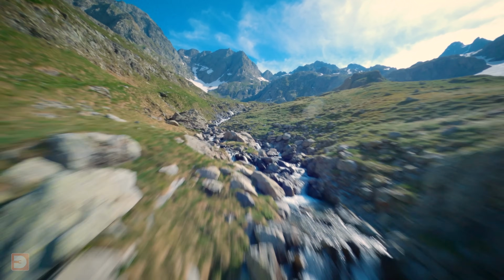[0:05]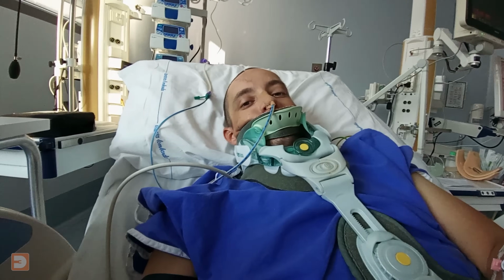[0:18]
Almost 4 years ago, whilst filming a series for Disney Plus, I fell 300 feet, just over 90 meters, down a mountain in the Italian Alps, breaking in multiple places my neck, my spine, my pelvis, well, pretty much everything, ultimately resulting in an 8-day coma and a drastic change in lifestyle going forward.
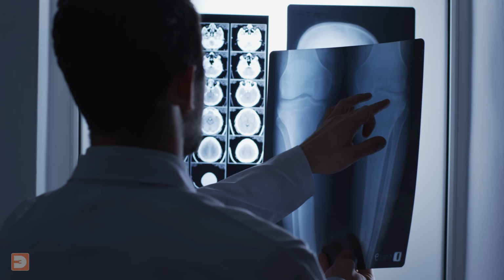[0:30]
With that being almost 4 years ago, I have obviously recovered a lot in many ways since then, but much of the fallout from that day is ongoing and or lifelong, and one of these issues is my leg.
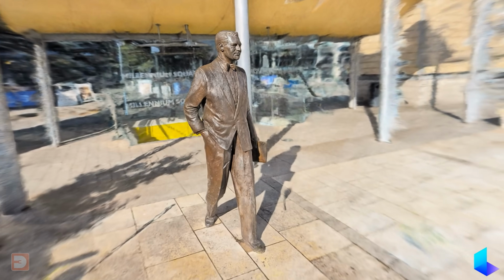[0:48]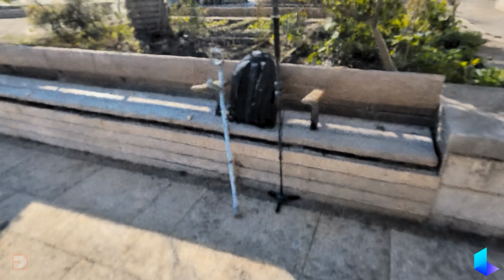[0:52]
Whilst I can stand and walk unaided for a bit, for example if I'm just walking from one room to another in my house, or if I'm just doing a quick standing shot for you guys, if I need to stand or walk for longer periods, it can cause issues, so when I'm out the house, I tend to use one or two crutches. I don't normally use them whilst actively filming, but you may have noticed them lying around in the background in previous videos.
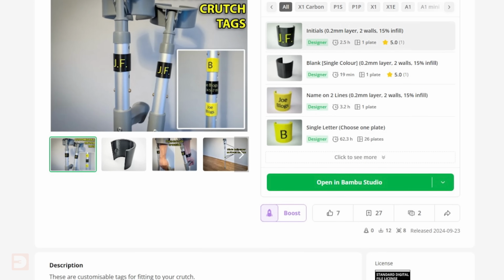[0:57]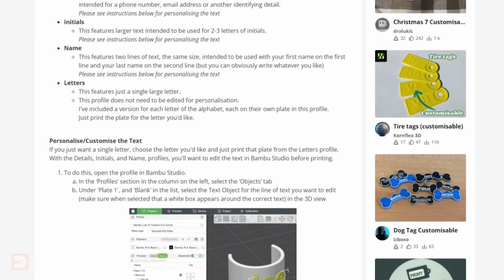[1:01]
A while back, I released a simple design for customizable tags that you could clamp onto your crutches, allowing you to personalize them a bit. And I have several useful crutch mods and accessories on the way.
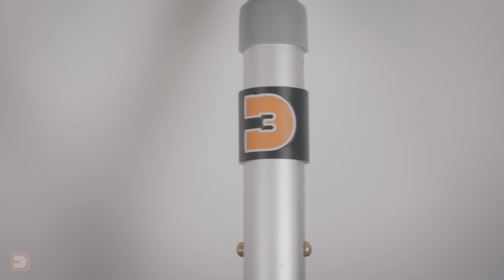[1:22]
As Makers Central, which is going to involve a lot of walking, began to approach, and as my leg's not been so good recently, I knew that I was going to want some sort of walking aid whilst there, but I also knew that I wanted something that felt a bit more me than my standard hospital-issue crutches, even if they are sporting the 3D Rev logo. So I decided to design and 3D print my own 3D Revolution walking cane, ready for use at Makers Central.
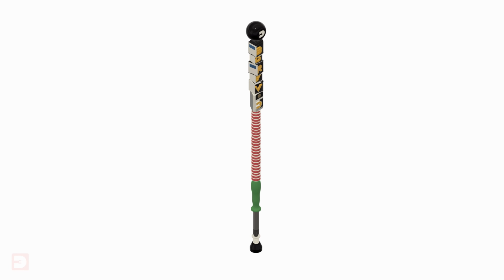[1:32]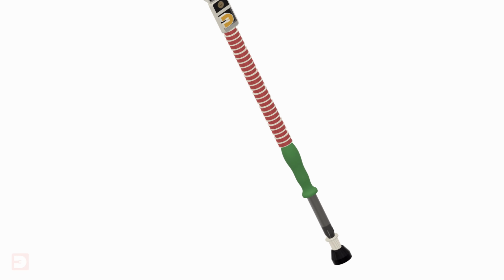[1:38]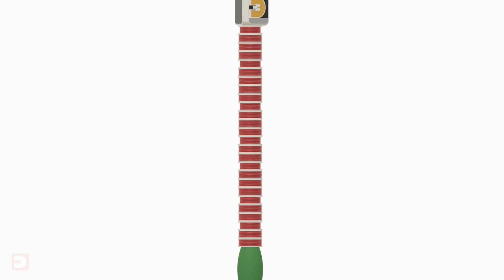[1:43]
Once I'd decided on an appropriate height for my cane, I designed what I felt was an appropriate cane for an event like Makers Central, featuring a screwdriver complete with screw, a stack of spools of 3D printer filament, and a pile of 3D printers.
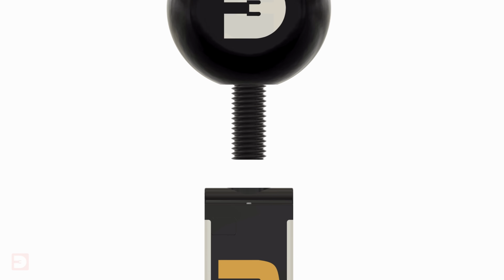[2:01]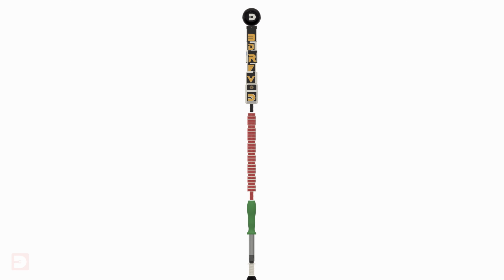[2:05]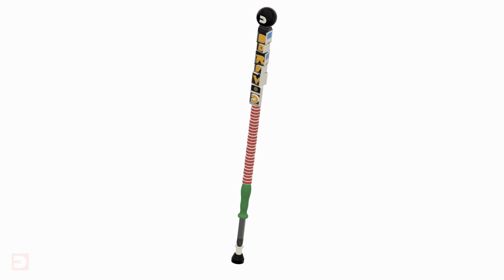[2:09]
Now, the height that I decided on for the cane is nearly a meter, and being that I don't have a Delta printer which can print at that height, yet, I divided the main shaft of the cane into three sections, plus the handle and the TPU foot. Each section has a printed, threaded screw built into the design, extending out of one end, with a threaded hole at the opposite end, allowing the whole thing to screw together.
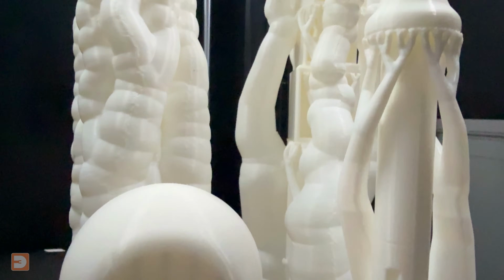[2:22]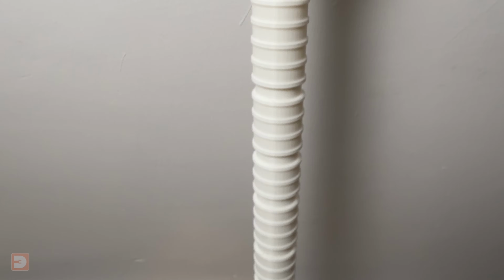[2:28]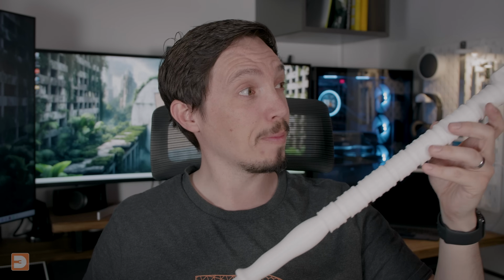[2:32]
Now at this stage I had planned to use a 5mm carbon fibre rod as a reinforcement spine, and so I had left a hole through the entire design to accommodate this. I printed it out in one colour and low infill, just as a quick test to check that I was happy with the size and design before committing to a much longer, full-strength multicolour print. I was really happy how the test print came out and all fitted together.
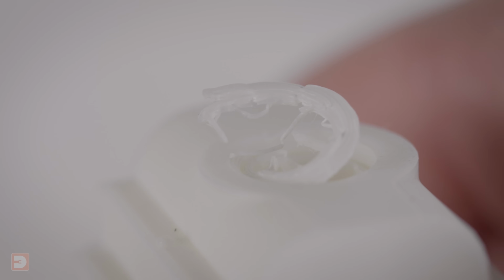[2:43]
However, as I was tightening up the handle, at the point that the screw met the handle part, it delaminated and split off. Now I'd possibly naively assumed that this was due to the low infill and wall count of this draft test print, and didn't feel that it necessitated any changes in design. In fact, quite on the contrary, I felt that the rest of this print was stronger than I'd expected, and so decided to remove the hole for the carbon fiber rod from the design.
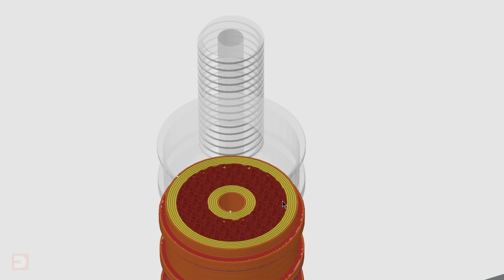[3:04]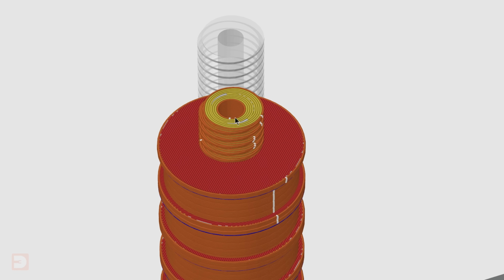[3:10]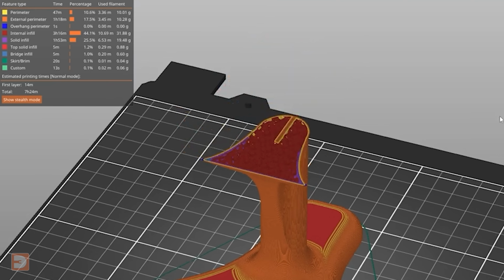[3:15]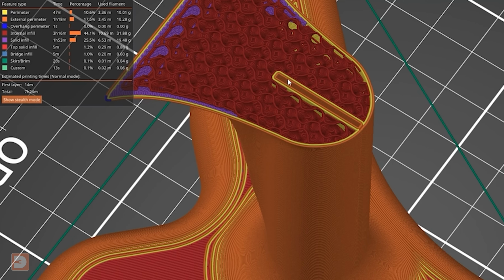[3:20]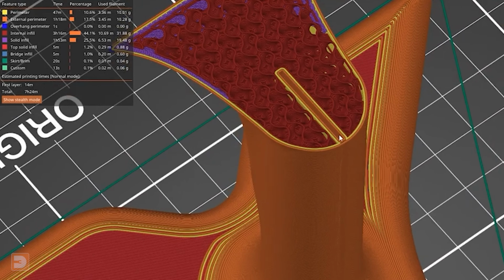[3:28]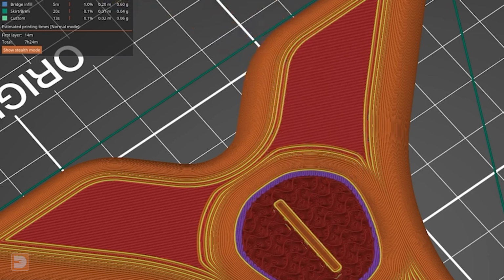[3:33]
This was because I didn't feel that the rod was necessary for strength, and featuring the hole to cater for it would make the thinner parts of the design, especially the screws, extra thin. This is despite it adhering to the trick that I covered in an earlier video a couple of years ago, where adding a negative volume inside your model can actually increase its strength, as it will add additional walls around the negative volume. However, that's more for if the negative volume is closer to the outer edge of the model, so that the new walls are directly connected to the exterior walls as a continuous extrusion, and with these parts being relatively thin already, this doesn't offer a huge help.
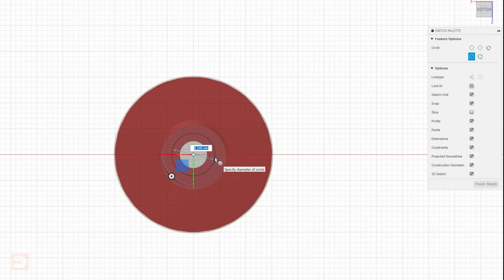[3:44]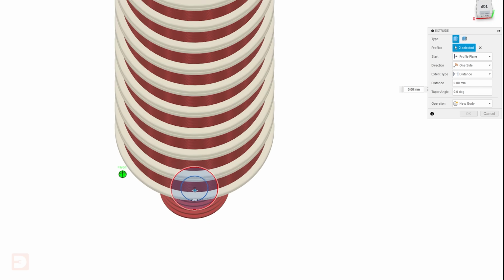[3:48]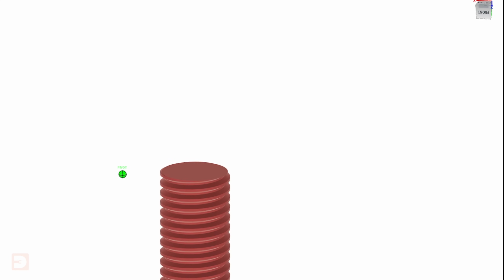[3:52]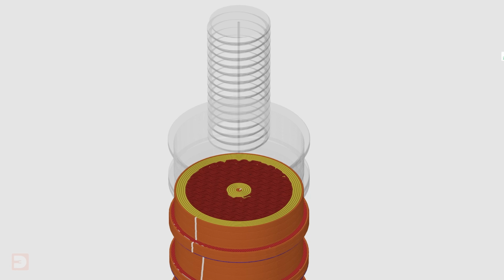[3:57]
So I made a compromise. Whilst removing the hole big enough to fit the carbon fiber rod into, I kept a very small hole in the same place that would allow air to escape when screwing together to prevent any chance of air pressure buildup causing fitting issues when connected, and this then still added the additional walls down the center.
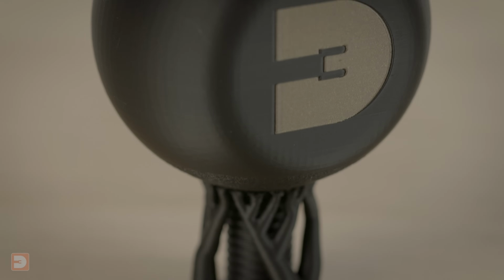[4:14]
With those design changes made, it was time to print it, and the full color, full strength print time came to around 3.5 to 4 days, partly due to the amount of color changes and partly due to the height of the prints.
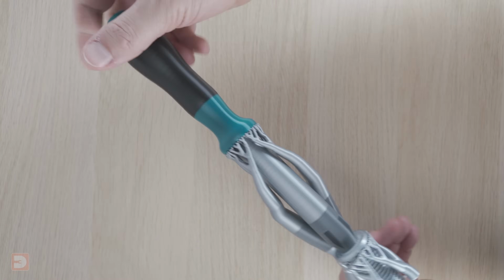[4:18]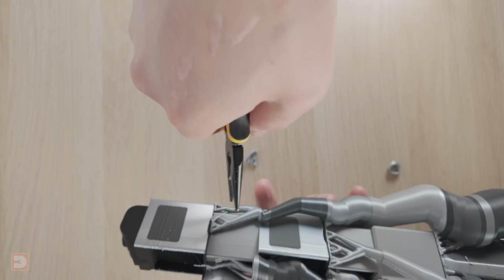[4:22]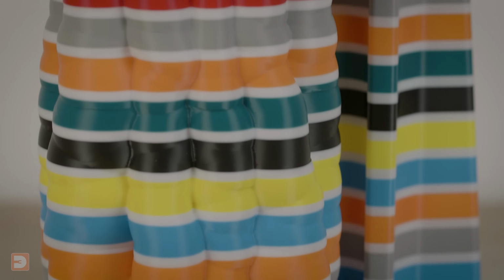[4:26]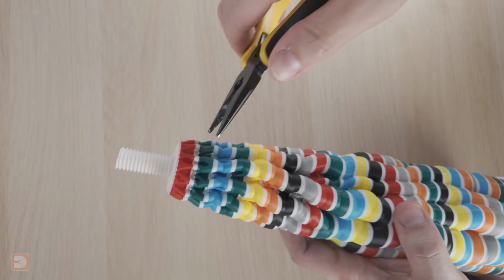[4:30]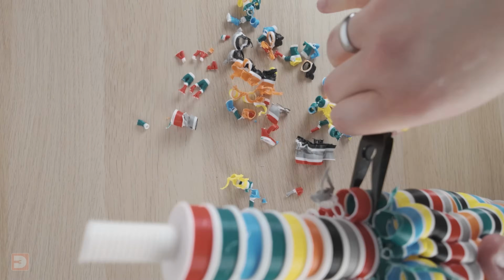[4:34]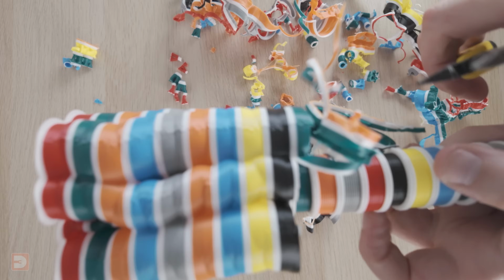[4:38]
Each section of the cane was encased in its own shell of support material. The screwdriver and printer sections were fairly quick and simple to remove. However, the filament stack section, due to having overhangs around the entire perimeter every few millimeters of height, was entirely shrouded in support material. But whilst it did take a while to remove, and with the help of needle nose pliers, it was actually very easy and came away without an issue.
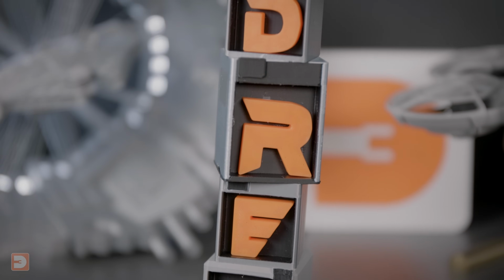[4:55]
I screwed it all together, including the TPU foot, and glued in the letters into the printers. I could have printed the letters as part of the main model, but that would have then added an additional 1 to 2 color changes per layer, and the letters would have also required their own support material, so it wasn't worth the hassle. It looked and felt great.
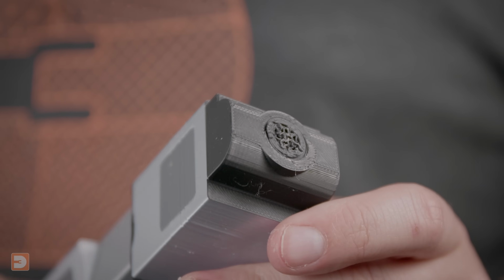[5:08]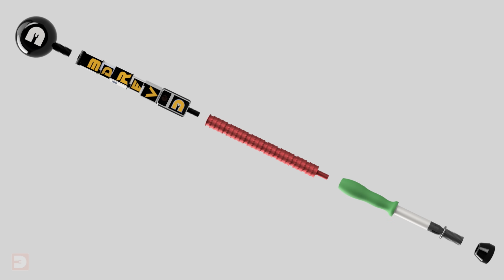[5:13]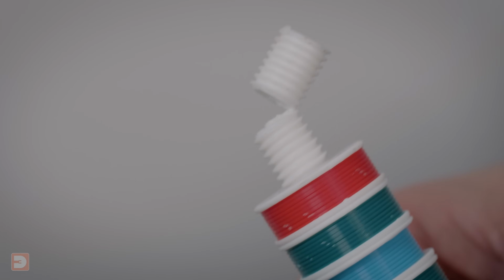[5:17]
However, whilst testing it and before I even got to film it for you, just like the test print, one of the screw sections connecting two of the segments snapped. I then tested the strength of the other screws on the other segments and found the exact same thing happened. They all delaminated across layer lines when put under lateral stress. With the segments all rendered useless now with their screws snapped off, I thought before continuing it would be best to test the strength of the actual lengths of cane themselves other than the screws to ensure that it wasn't just a general issue with layer bonding.
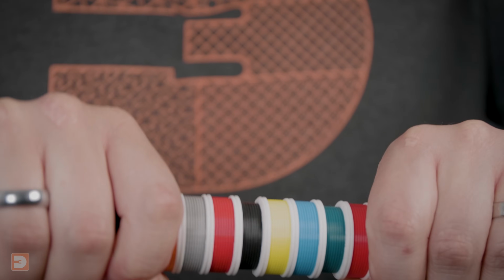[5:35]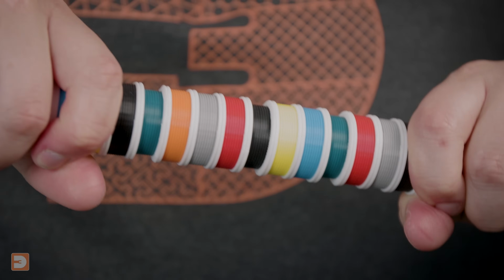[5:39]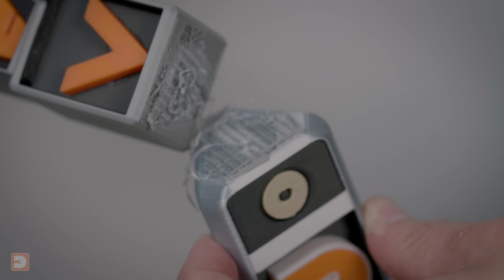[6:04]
The filament stack section, which featured the most layer bonds between different filaments, was super strong and wouldn't break. Whilst the printer stack was very strong, the Delta printer at the bottom did snap off. Now, this is at the point of a layer change between a silk PLA and a regular PLA, and it could suggest that there was an issue with these two filaments bonding. However, it did require a lot more lateral force to break this than the cane is likely going to experience in general use, so I wasn't too concerned.
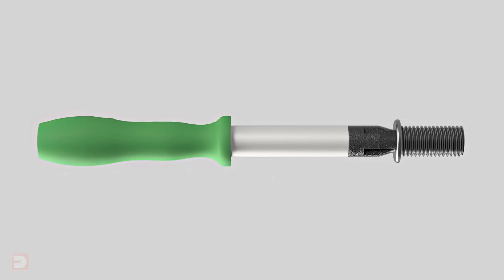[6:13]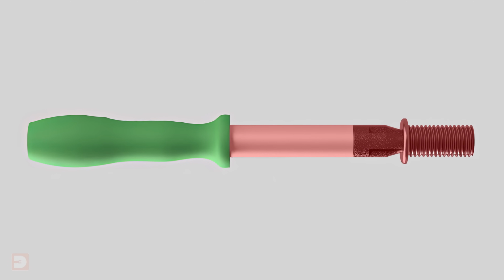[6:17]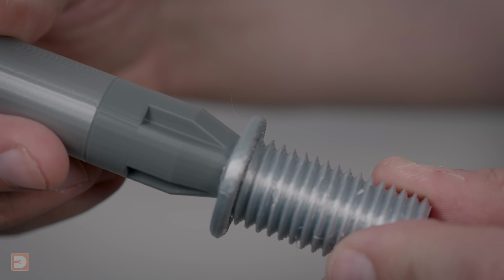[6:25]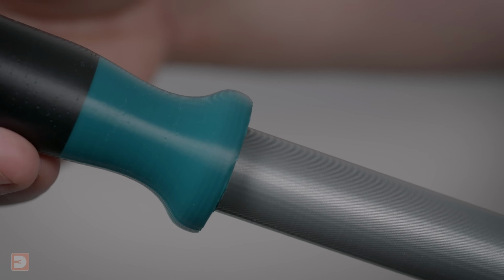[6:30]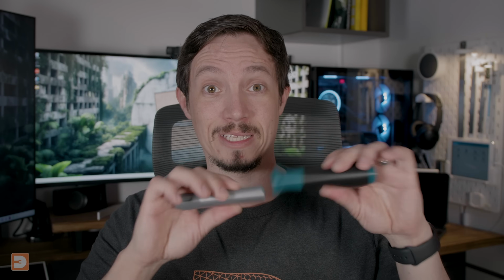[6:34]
The real issue, other than the screws, was when strength testing the bottom section, the screwdriver. The long extrusion of the screwdriver was already thinner than any other part of the cane, and then the point at which the screwdriver met the large screw at the foot was almost as thin as the diameter of the screws that have been snapping. This part snapped both at the point that the screwdriver connected to the big screw at the base and also at the top of the long extrusion connecting to the handle. So it was back to the drawing board again.
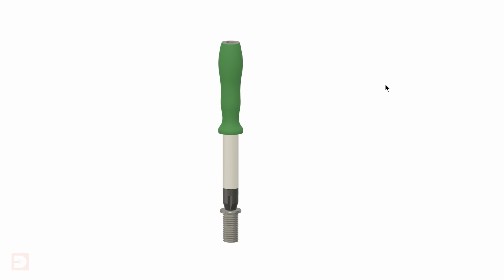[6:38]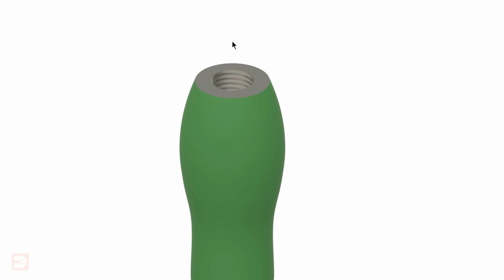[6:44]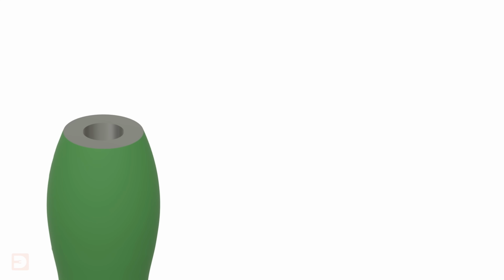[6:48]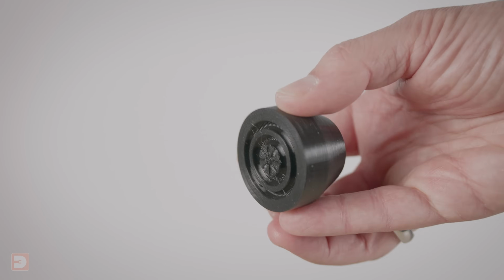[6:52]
The first of the issues to fix here was easy. I took the screwdriver and just made it fatter, therefore increasing the thickness and strength. I didn't increase the size of the base screws, so it would still fit the TPU foot that I'd already printed, which I felt was a good size for this use. The second issue, whilst similar, is slightly different.
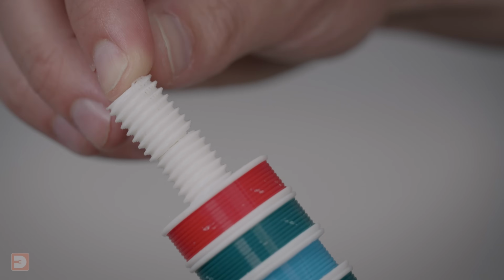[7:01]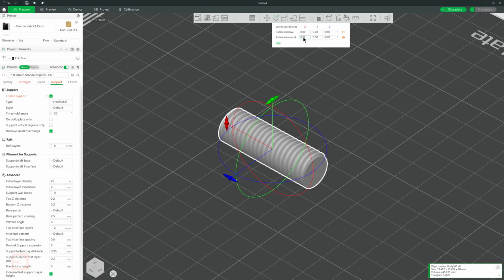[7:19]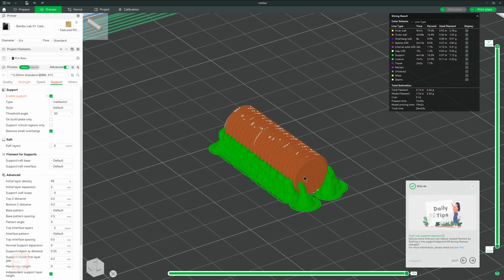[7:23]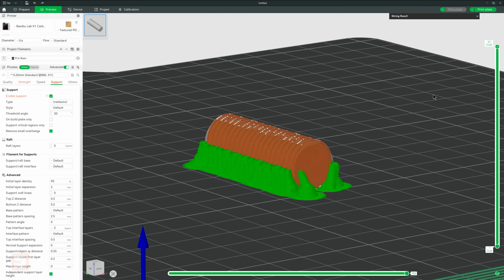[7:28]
All the screws connecting the segments of the cane together are breaking, but they're all breaking across the layer lines. No matter how I printed these screws, whether they were pre-attached to the main parts of the cane as they have been so far, or if I printed them on their own upright, they're still going to present the same weak point against lateral strain on the cane. The only alternative to printing these screws upright on their ends would mean printing along their sides using tons of support material, which would almost certainly impact the effectiveness of the screw's threads. But then I realized that's not the only alternative.
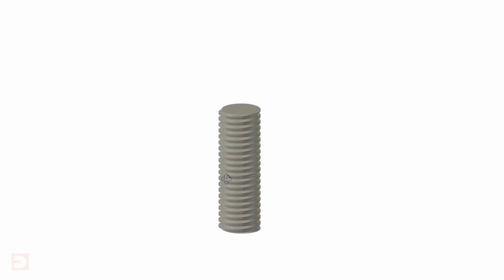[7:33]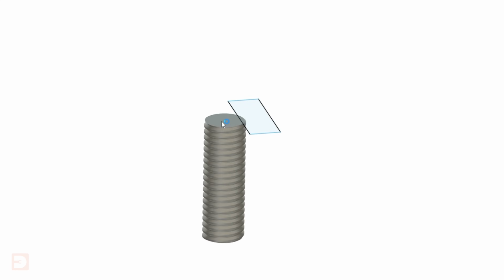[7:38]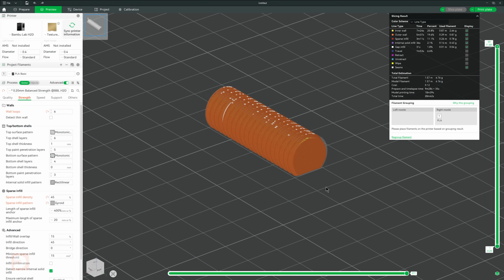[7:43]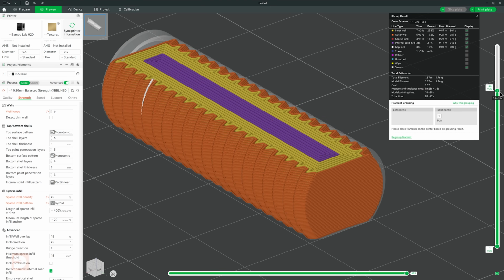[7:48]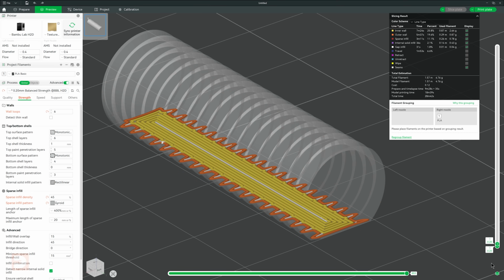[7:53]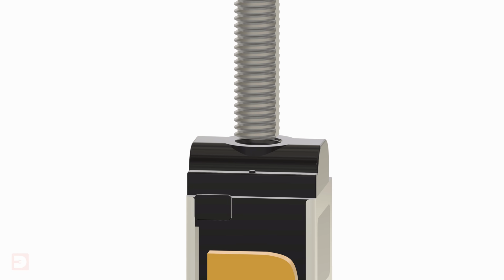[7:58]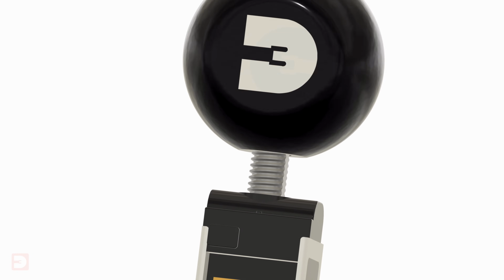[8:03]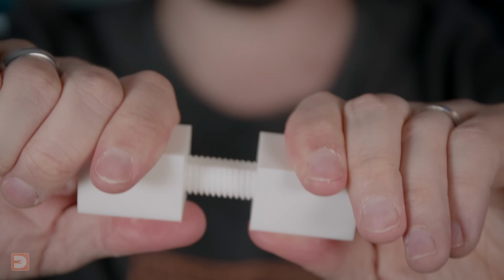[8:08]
If I designed the screws as separate standalone parts, which would be connected to the cane post-printing, and then sheared off an area of one side, I could then print it lying flat on the print bed without the need for supports or overhangs. With it printed sideways, it means the extrusion runs lengthwise, providing significantly more strength and preventing snapping due to delamination. When fitted, these screws will only ever be placed under lateral force, unlike the rest of the cane that will be put under downward force, so this should be perfect. I did a quick test print as a proof of concept, and it works perfectly.
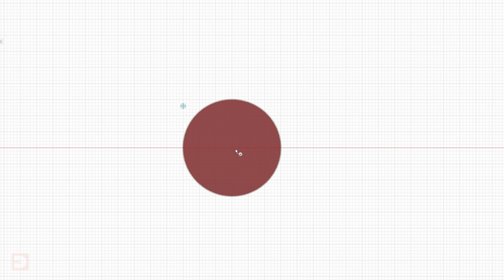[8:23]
As an added bonus, due to the sheared side of the screw leaving a gap down its entire length when being screwed in, there's no chance of it forming a seal and building up pressure, so I could completely remove the hole down the entire length of the cane. As the screws were no longer pre-fitted to the actual cane lengths, they needed to be replaced with female threads.
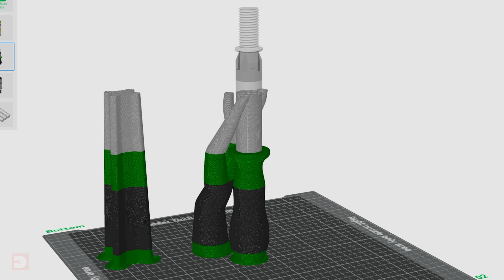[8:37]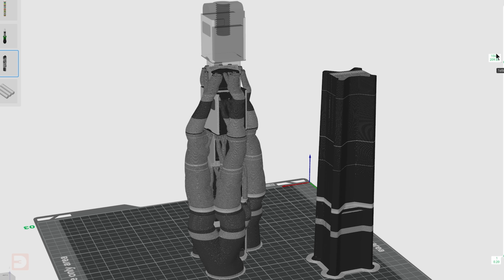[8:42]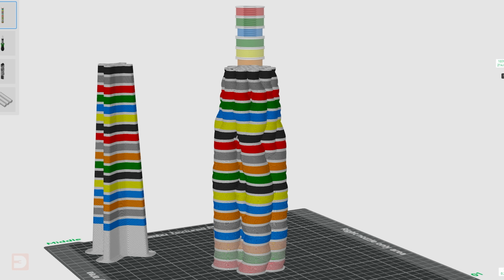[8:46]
When it came to slicing and printing this iteration, it actually shaved off a huge amount of print time, especially on the segment with the stack of 3D printers. This was because it not only reduced the overall height, but because they also had support material running the full height of these models, so it meant significantly less support was required.
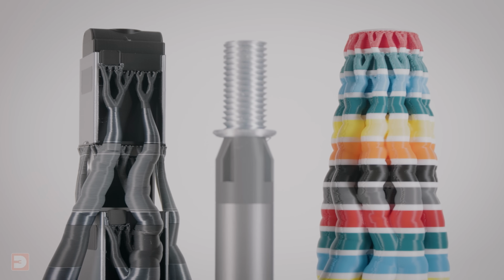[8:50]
So with this all printed again, it's time to remove the support material again. Luckily, we got a head start as the support material for this segment came off as I was removing it from the print bed. Now let's get on to these.
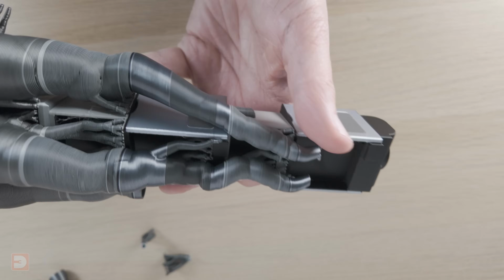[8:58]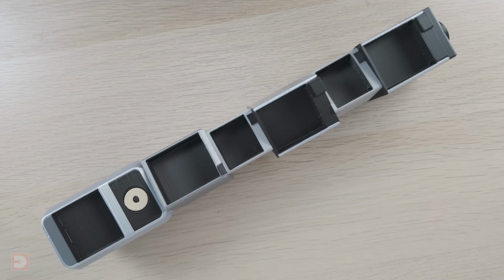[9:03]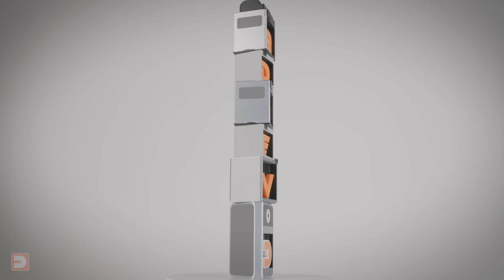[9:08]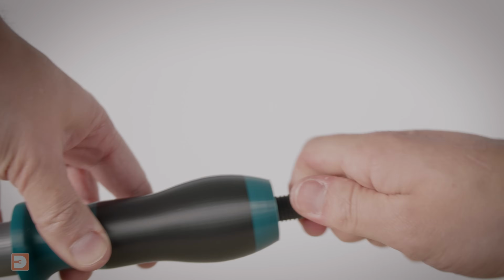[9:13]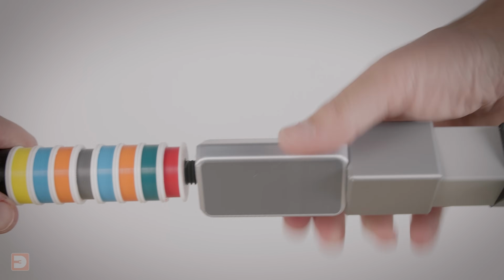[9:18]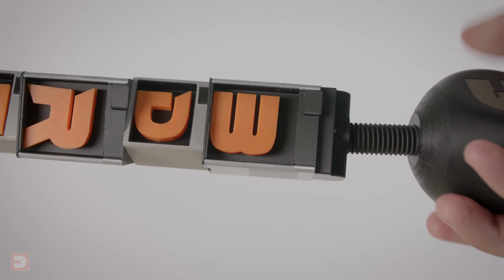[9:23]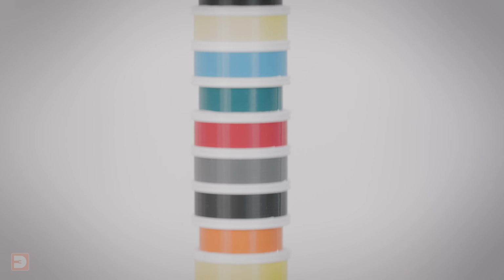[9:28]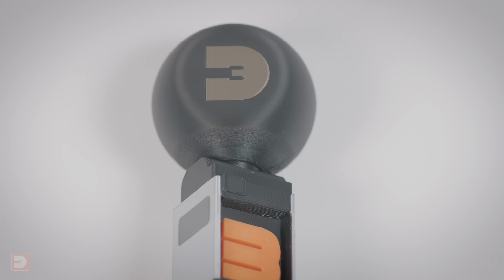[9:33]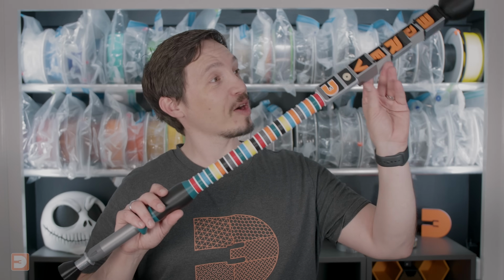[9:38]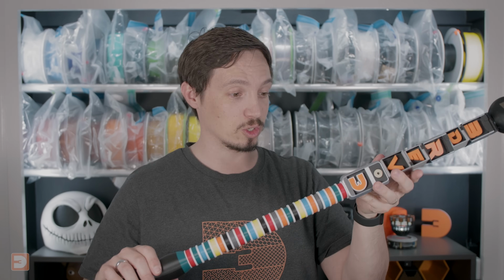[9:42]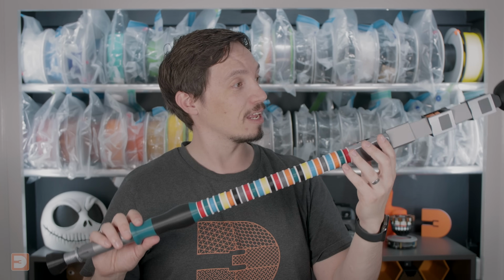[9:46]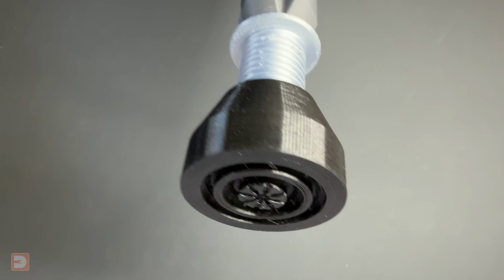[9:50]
Well, that was definitely a bit of a journey, but I think it has come out really nicely. This latest version has all screwed together really solidly. The detail is really nice in it, and it just works. It works really nicely. The grip on the base is really grippy.
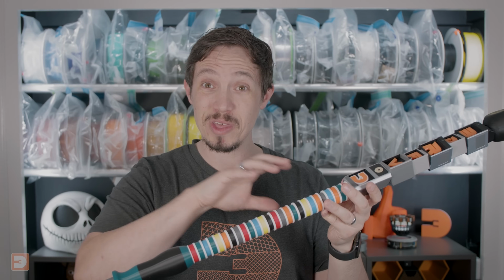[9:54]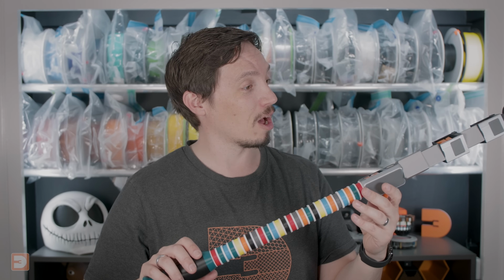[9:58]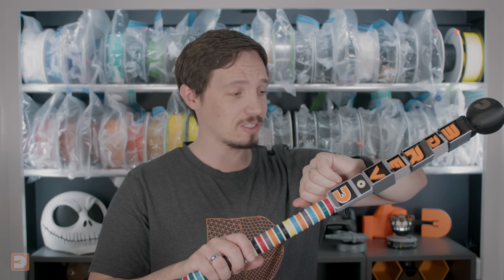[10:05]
Now, I've not gone out of my way to really try and break it because that's not its use case. I don't want to break it, but it's been doing really well testing it around the house. So we'll have to see how well it fares at Makers Central. And I think it's about time to head to Birmingham, so I best head off.
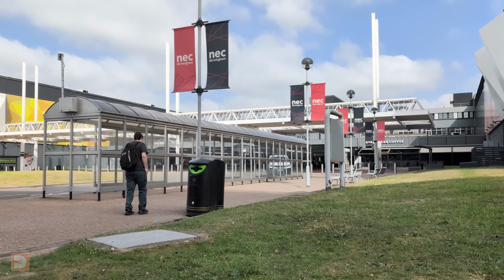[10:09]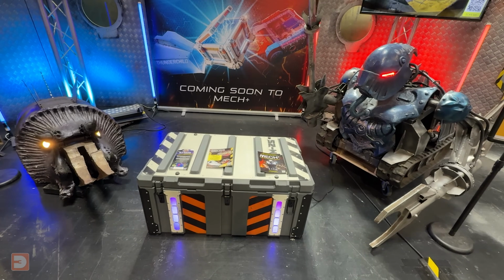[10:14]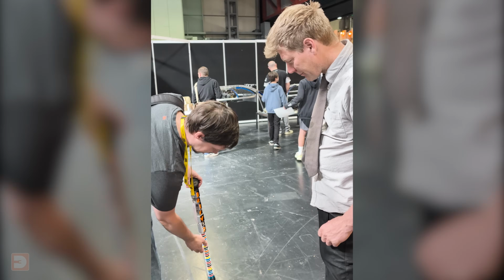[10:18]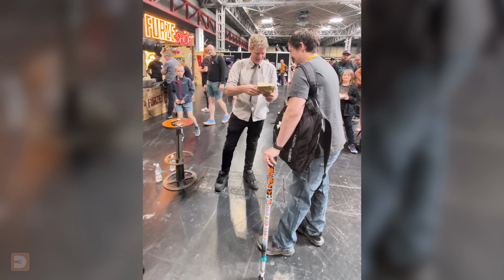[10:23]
The cane was working well and doing its job as I arrived at Makers Central. Having done a quick circuit of this year's setup to get a lay of the land, the first thing that I really did was go and see Colin Furze to give him a piece of his rock wall which I'd printed him for his underground garage.
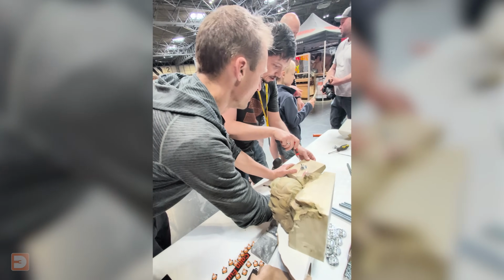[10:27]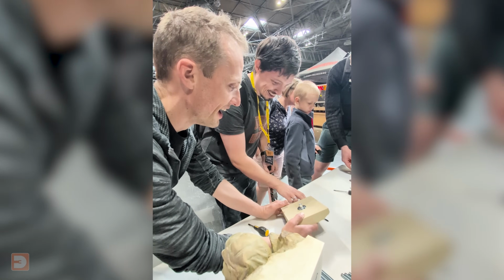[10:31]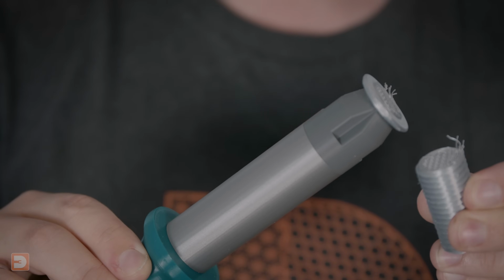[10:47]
Whilst screwing the mount into the back of the rock piece, with the cane just leaning against the table, I heard the base of the cane cracking. I'm not quite sure what happened, whether someone stepped on it or if the table flexed and somehow caught and twisted it, but the cane had been rock solid up to that point and suddenly the screw at the base of the screwdriver segment just snapped off.
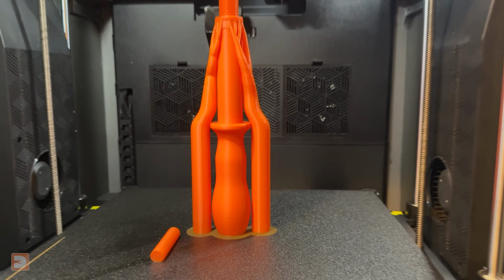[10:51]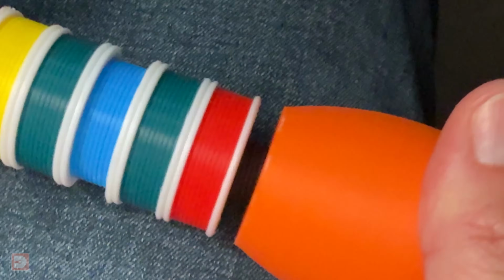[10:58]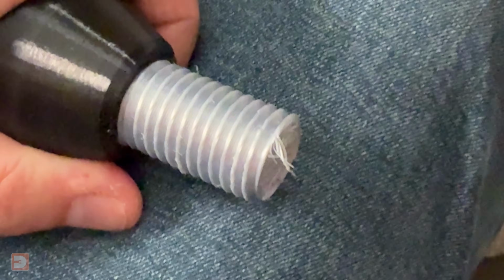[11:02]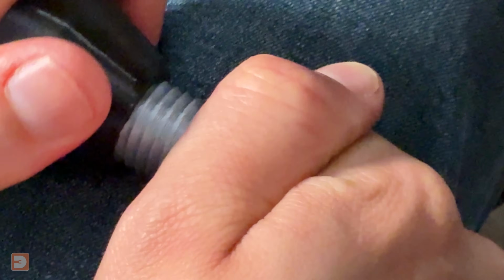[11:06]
Luckily, as a last minute thought the day before, I decided to print a single colour spare part for this segment. So I sat down, removed the broken segment and just screwed the new one on. Now the problem was the TPU foot was well and truly stuck on the broken screw part, and I hadn't brought a spare for that.
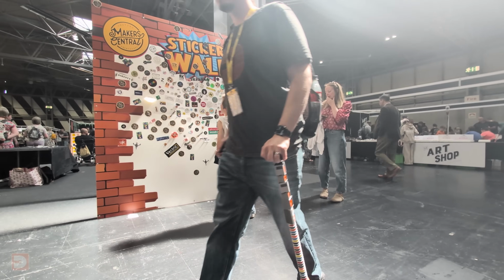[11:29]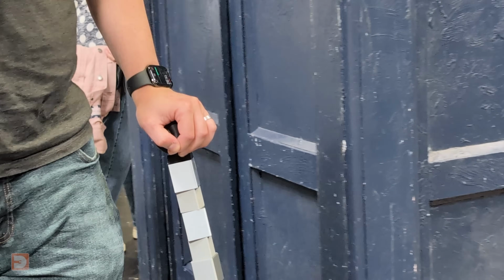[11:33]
If only there was someone here who had a tool that could grip this so we could remove it, I said to my friend Guthrie as I gazed out over the largest expo of makers, from blacksmiths to roboticists, in the UK. So a big thank you to the guys on the Axminster Tools stall for helping remove it. With the foot popped onto the new orange base piece, I took back to the floor to continue exploring Makers Central and meet some fantastic makers, including some of you wonderful people.
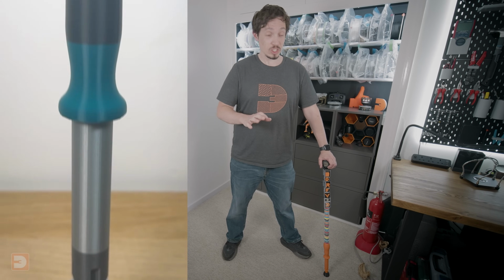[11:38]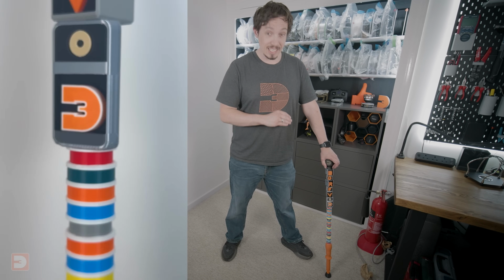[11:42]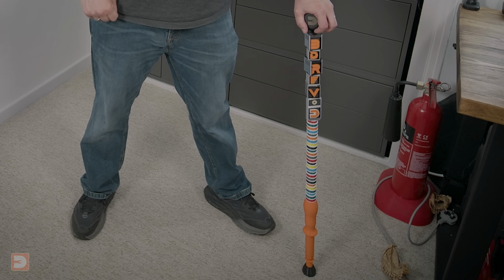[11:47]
For the rest of the day, which did involve quite a bit of walking, this thing was solid as a rock, and it hasn't given me any issues since. So I would say for the most part, the 3D printed cane is a success.
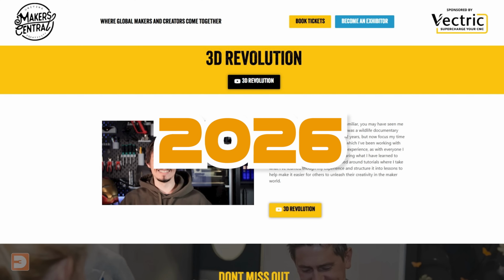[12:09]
I hope you've enjoyed this fun little make. This wasn't originally intended as a video. I just decided to make this cane and then figured that some of you may be interested in its journey. And as you're still watching, I'm presuming that's the case. And thank you for joining me to the end.